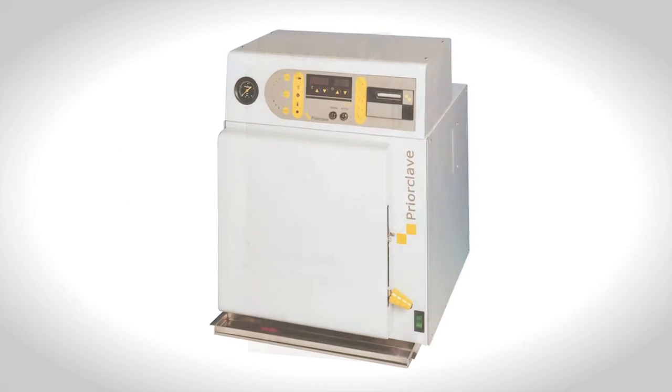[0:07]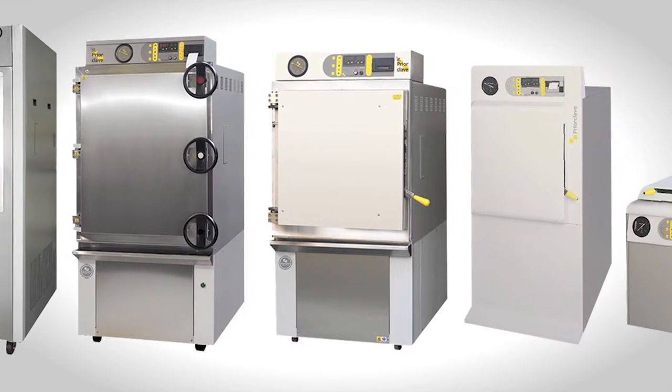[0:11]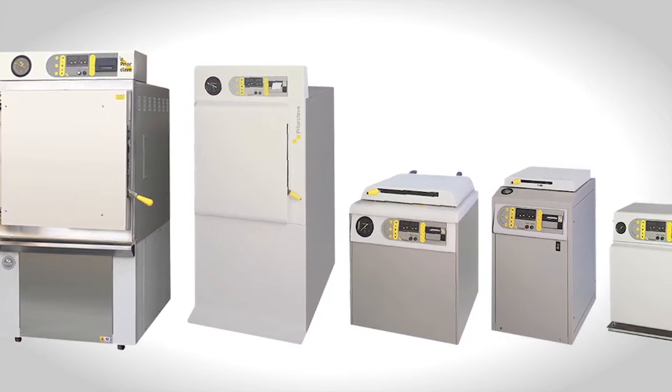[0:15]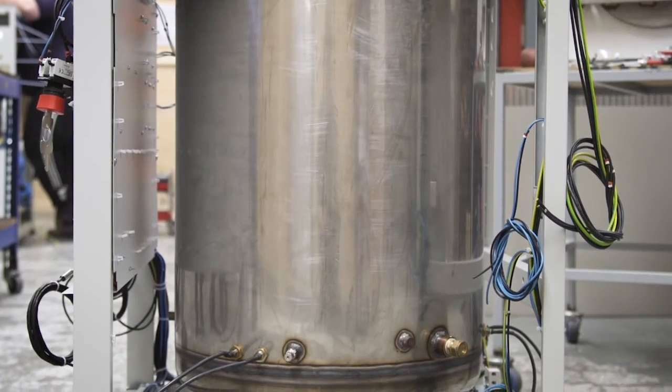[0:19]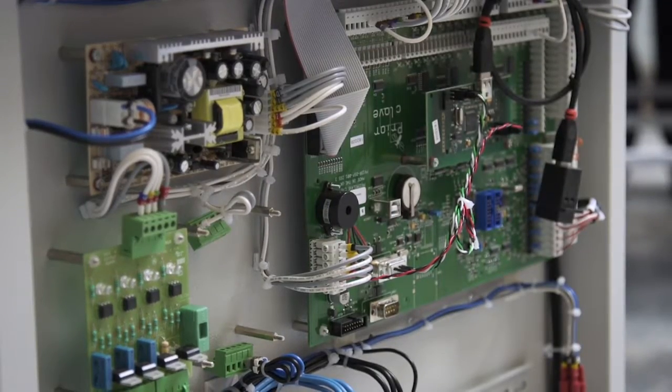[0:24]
For over 150 years, autoclaves have been used in laboratories to eradicate microorganisms and bugs from glassware, instruments and laboratory waste for safe reuse or disposal. The autoclave has three major parts: the pressure vessel, a frame and panels to support and cover it, and wiring and controls to manage the system.
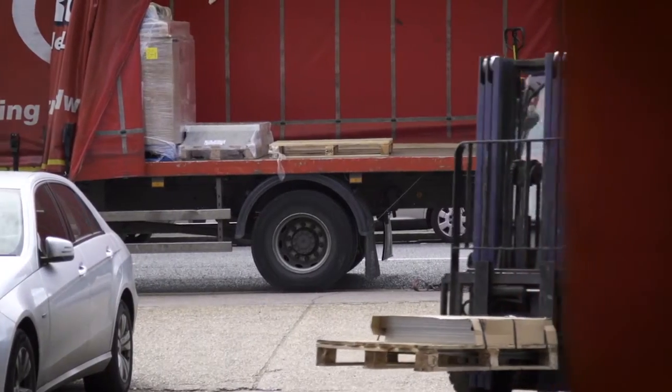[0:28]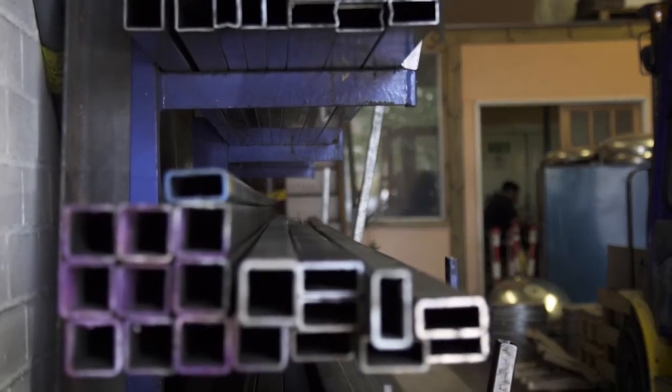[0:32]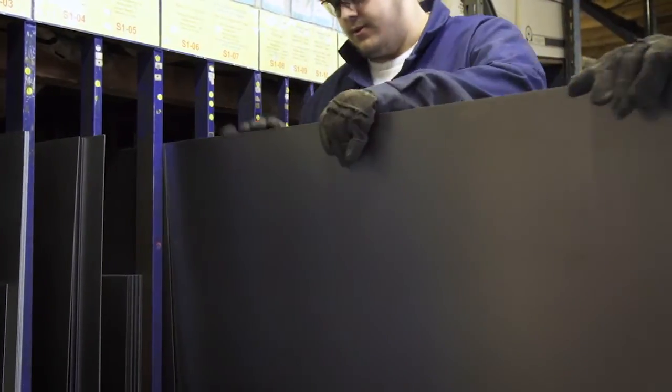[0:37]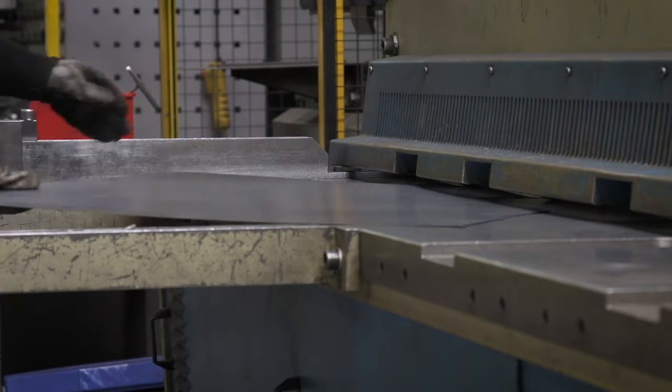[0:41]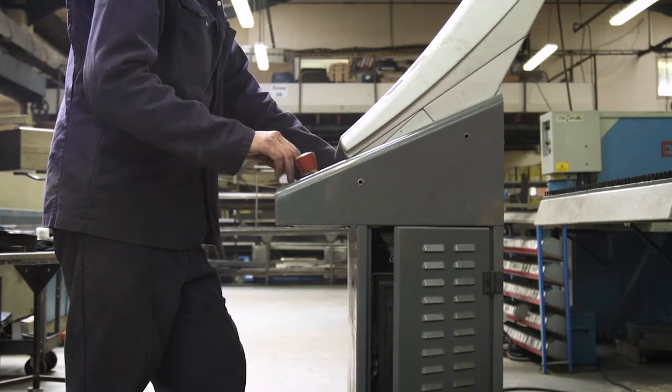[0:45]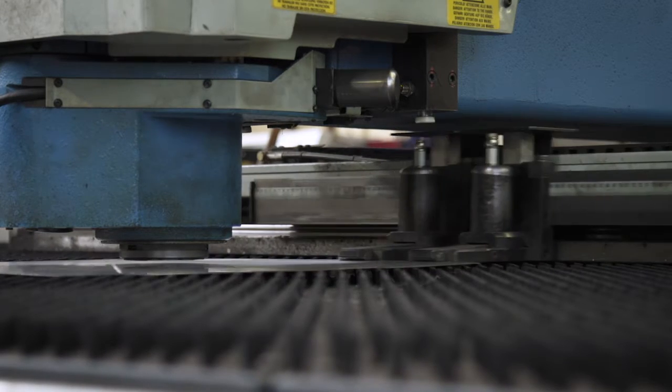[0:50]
Sheet and square section steel is offloaded and held in the metal store to await call off into the metal fabrication workshop, ready to start the manufacturing process. Workers use the heavy duty guillotine to cut the steel and produce the basic flat panel shapes needed. Next, a CNC floating table hole punching machine is used to punch holes and other shapes into these panels.
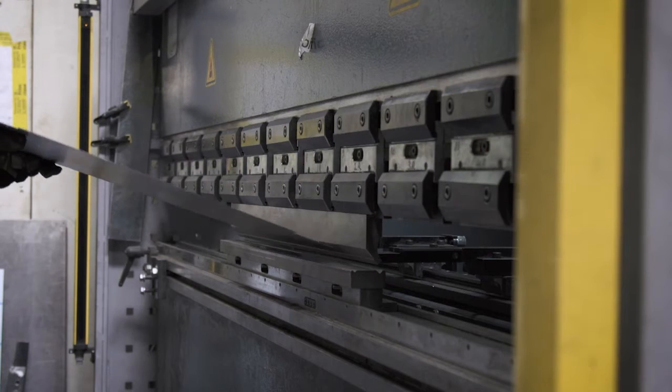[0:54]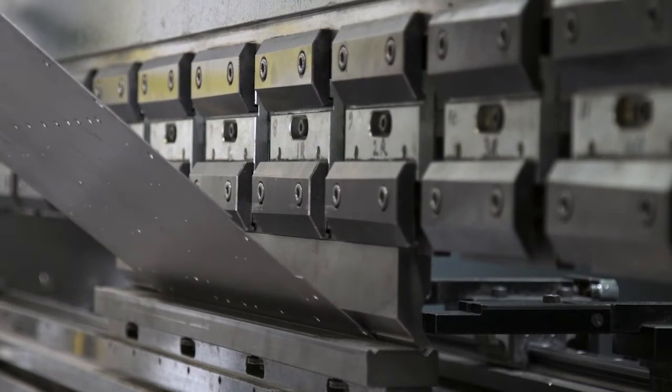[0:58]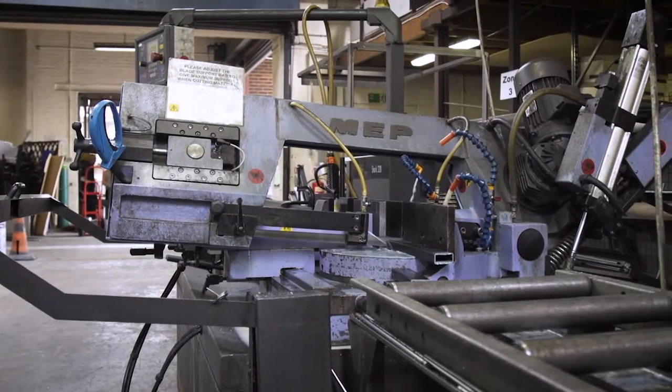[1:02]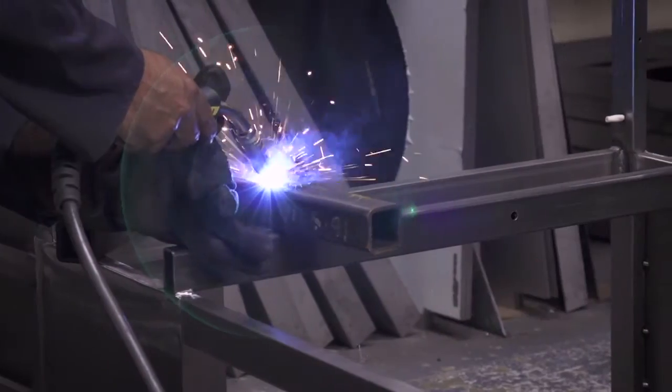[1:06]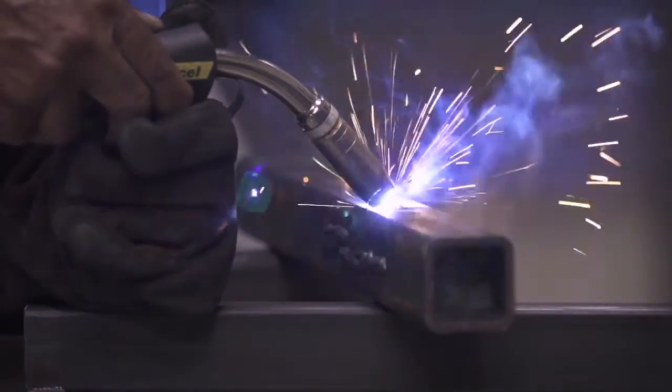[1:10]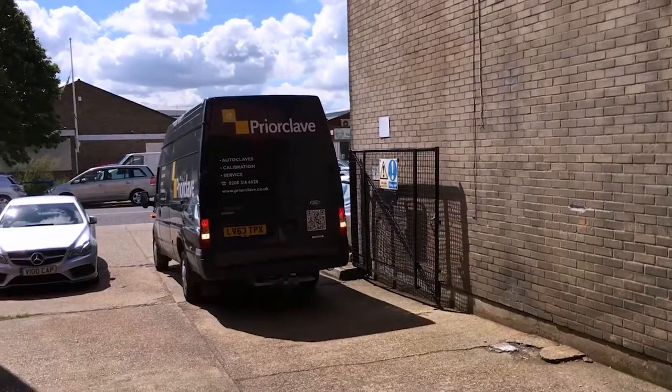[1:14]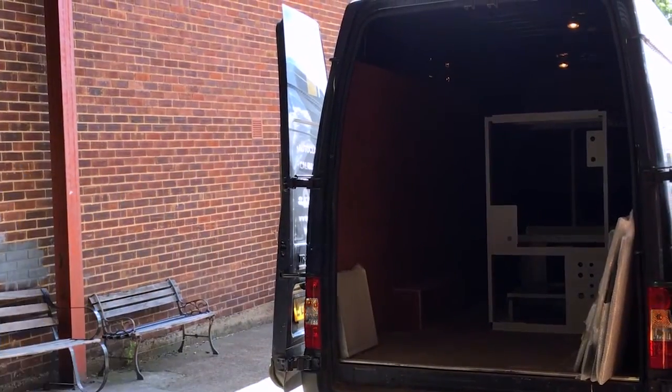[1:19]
The punched panels are then transferred to a metal bending machine, where workers create clean panel lines and smooth rounded corners that feature in the final build. Lengths of steel bar and angle for the autoclave frame are cut on the CNC saw and welded together ready for painting. At this stage, some finished panels are incorporated onto the frames. Finished frames and panels are sent for painting in antimicrobial powder coat and are returned ready for final assembly.
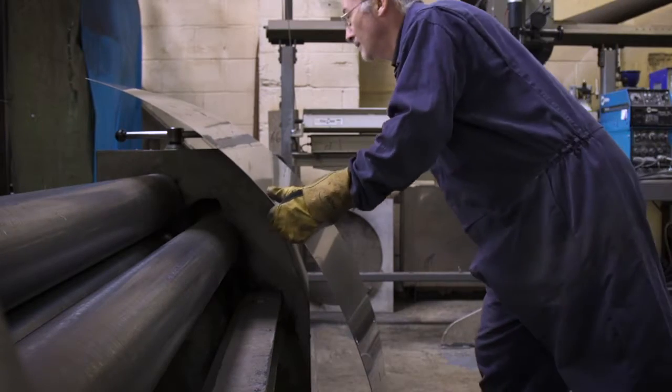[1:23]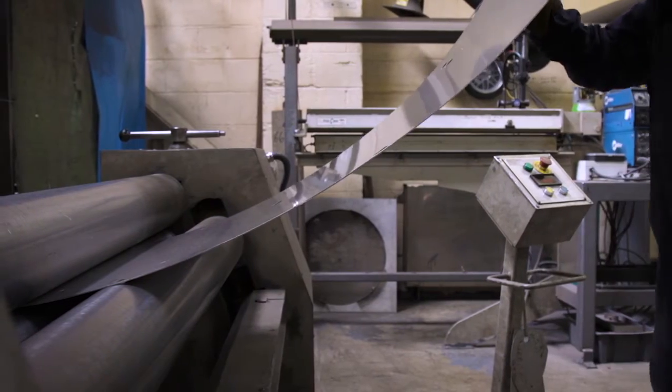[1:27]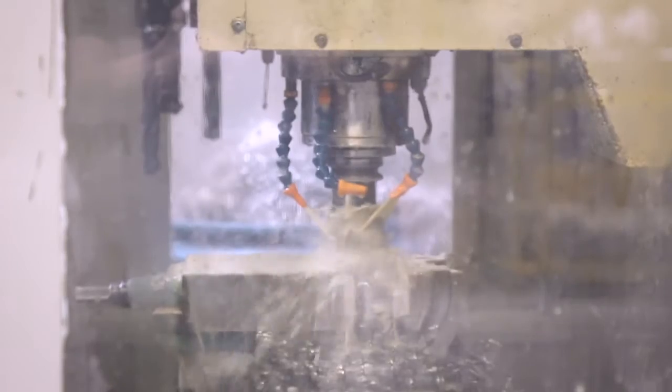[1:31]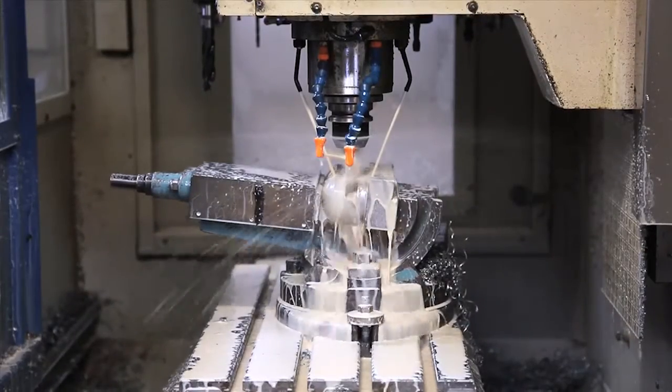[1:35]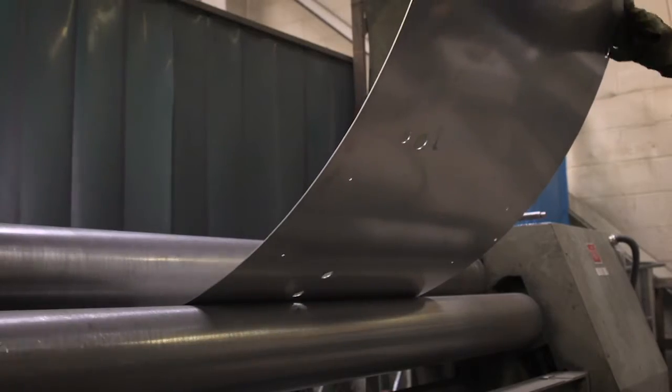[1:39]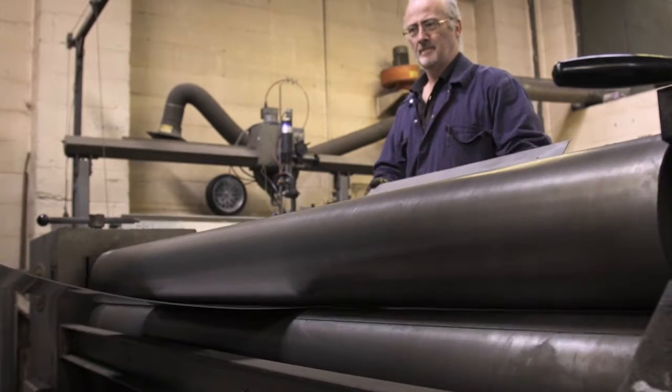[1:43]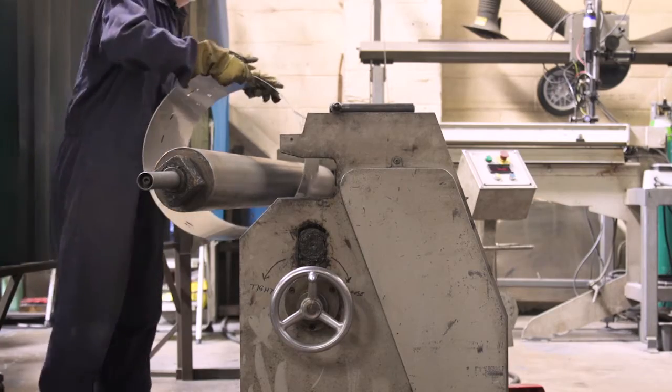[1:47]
High-grade stainless steel sheet is used to fabricate the pressure vessel and is fully certified to ensure full traceability. Laser-cut stainless steel header and door plates are machined on CNC lathes, mills and drills to finish them ready to form part of the finished pressure vessel. The pressure vessel wall is formed from a cut and punched flat panel on a rounding machine, making a gentle roll to bring two outer edges together.
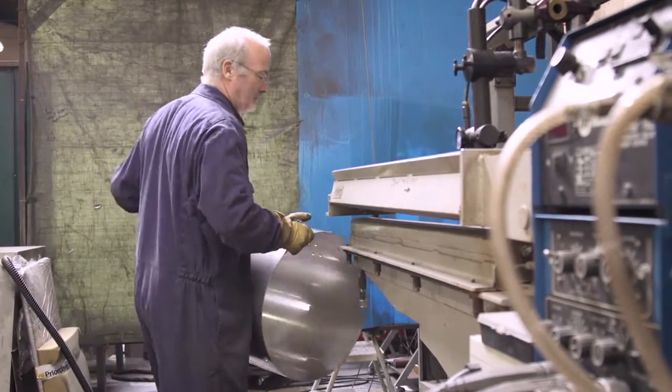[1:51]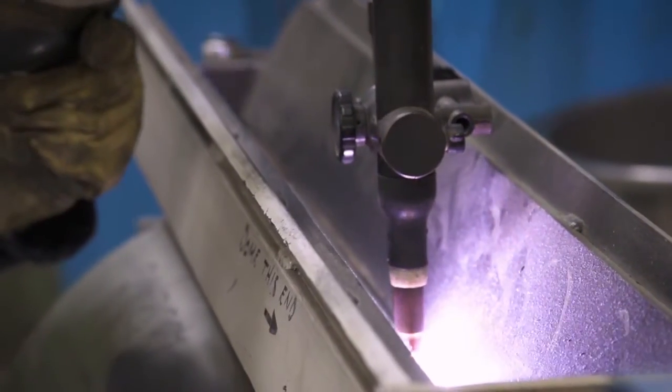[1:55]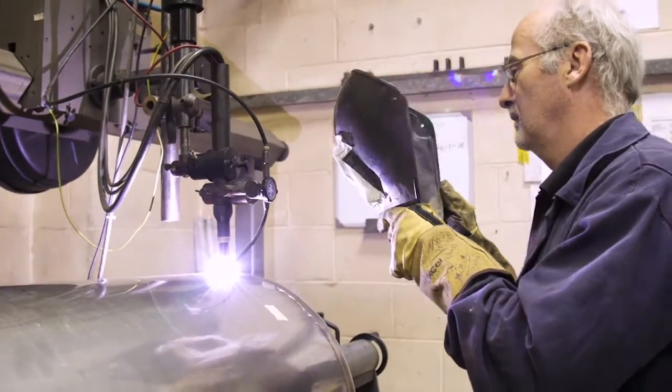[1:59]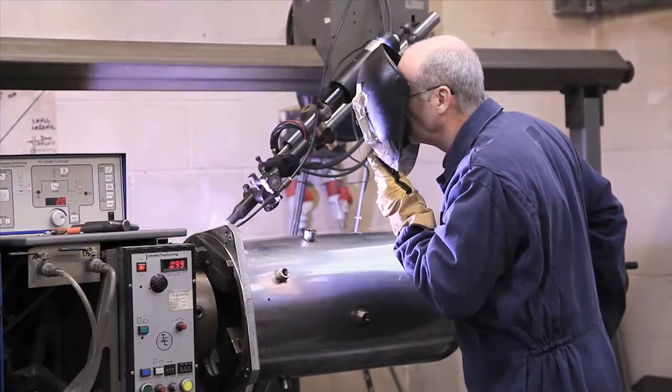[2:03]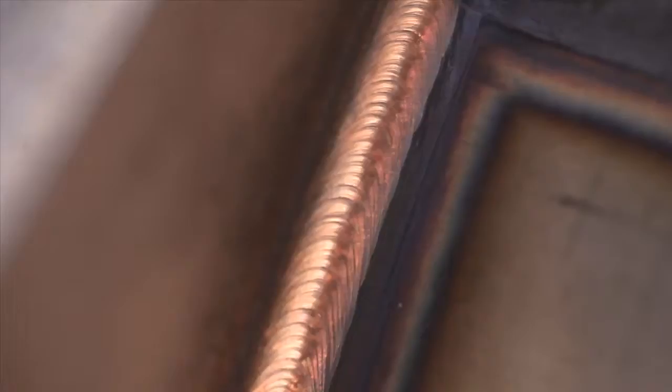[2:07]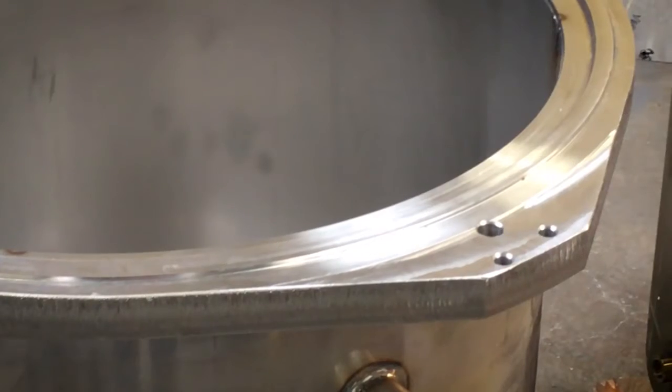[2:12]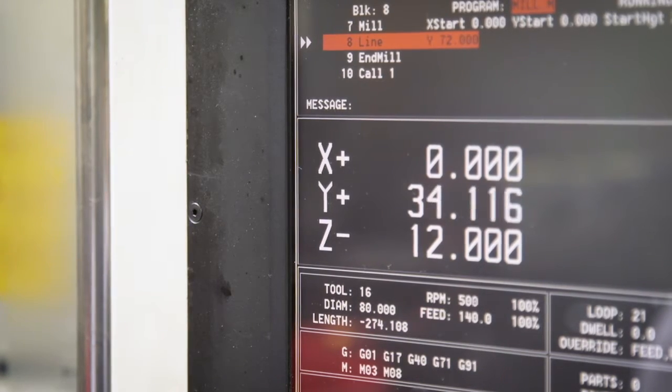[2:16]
An automatic seam welder is then used to produce a straight and smooth seam weld. Next, a large end cap is welded to the tube to finish the basic chamber construction. To finish the pressure vessel, a stainless steel header plate is welded to the open end of the cylinder. The header plate incorporates mounting flanges used to mount and fix the pressure vessel to the autoclave door and the mounting frame.
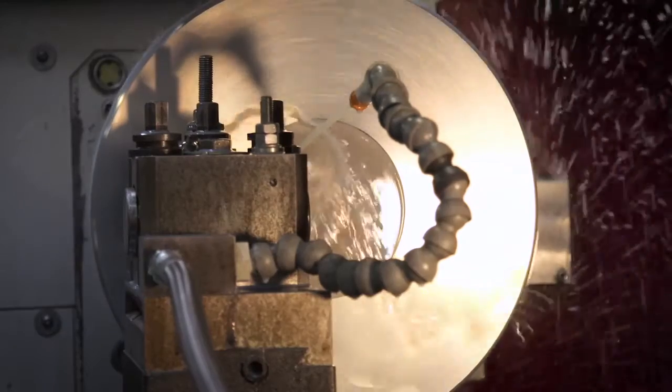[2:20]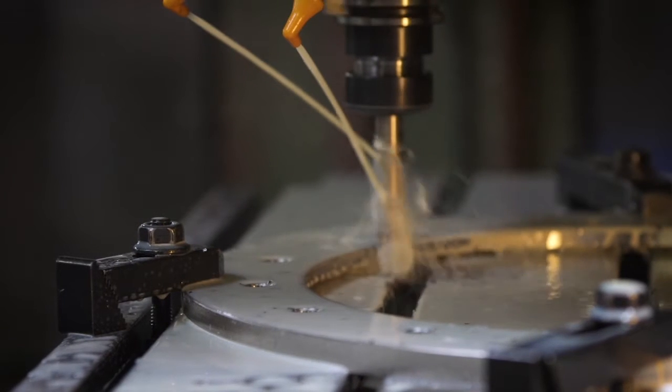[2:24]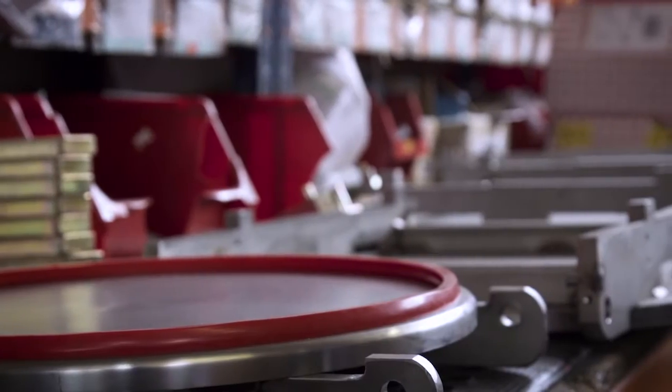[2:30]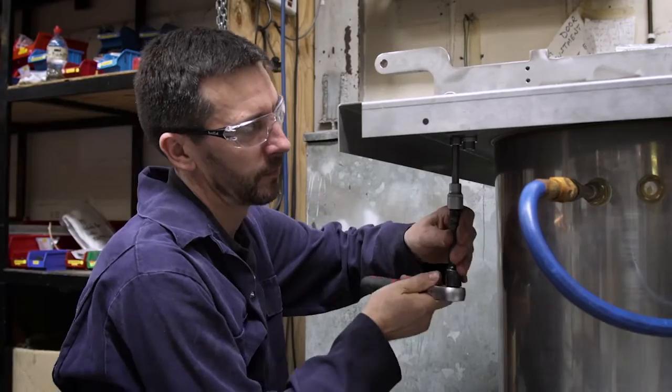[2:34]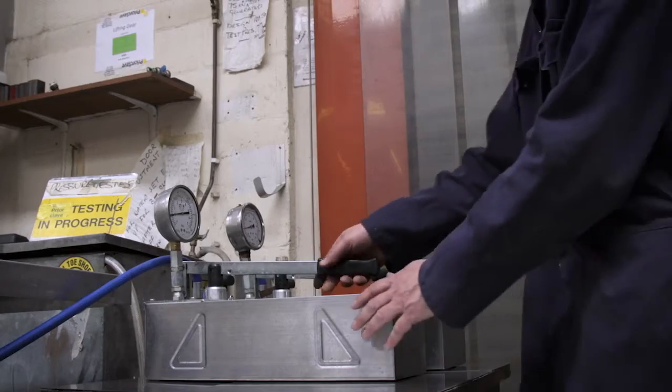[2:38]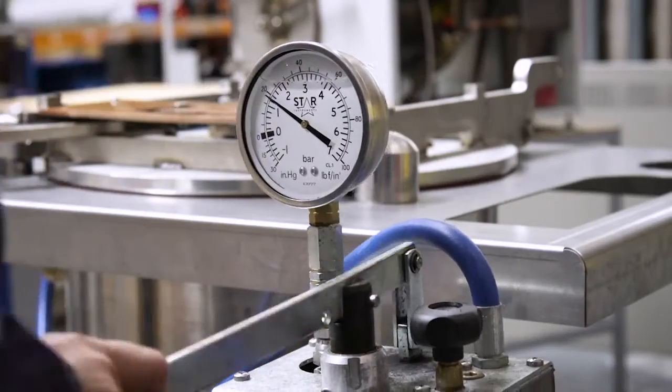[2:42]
Whilst the autoclave chamber takes shape, other parts of the workshop have also been busy. CNC multi-spindle lathes and milling machines produce the various smaller items that make up the finished build of a cylindrical autoclave. In the assembly area, the door and closure fittings are added to the pressure vessel so that it can be made watertight, ready for pressure testing. Every pressure vessel is tested under water pressure to 1.5 times its maximum design pressure and held for 30 minutes to check the integrity of the welds.
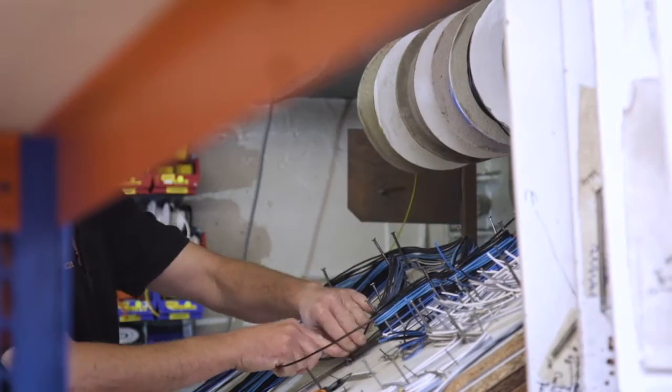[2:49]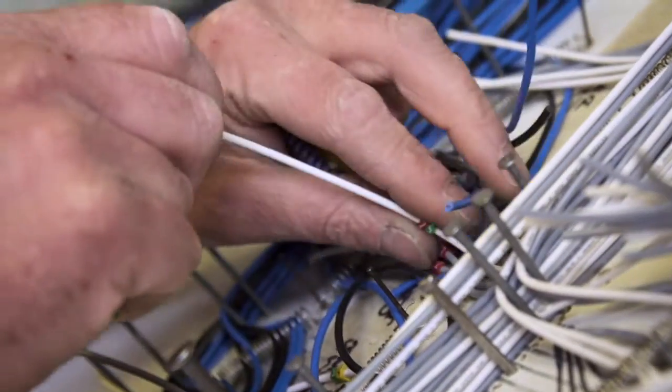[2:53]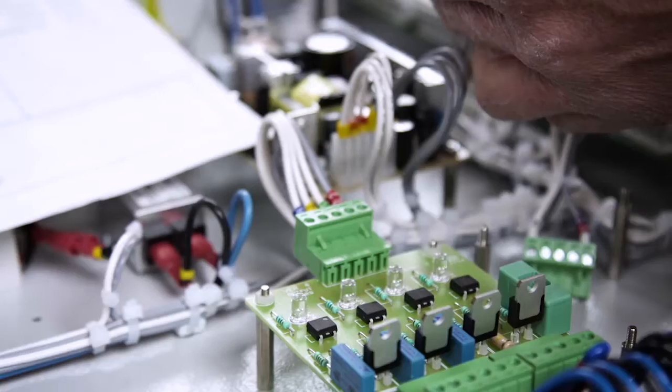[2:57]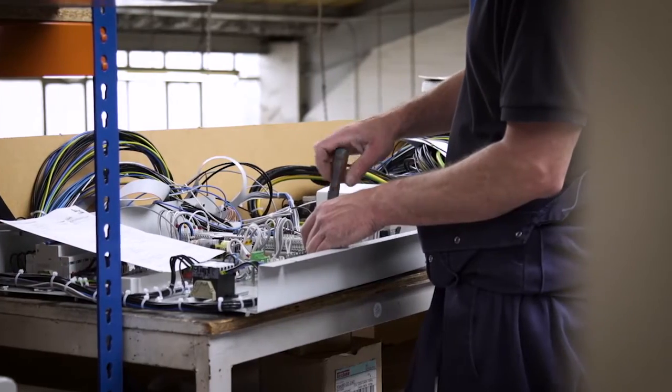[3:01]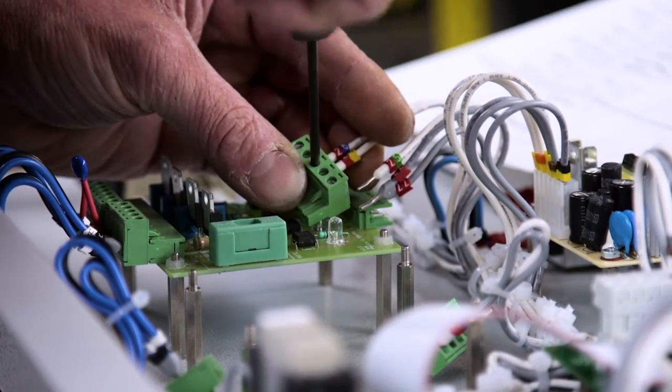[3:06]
In the electrical area, workers make up wiring looms to join all the electrical components to the control system. These are tailored to fit the shape of the autoclave frame. Control components, along with the microprocessor control board, are built up into an electrical chassis ready to be fitted along with the wiring loom to the autoclave during assembly.
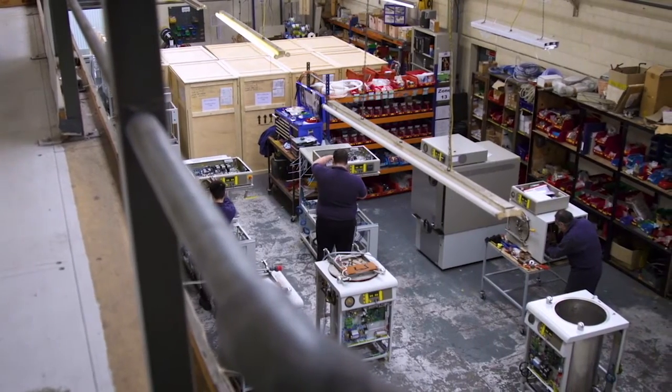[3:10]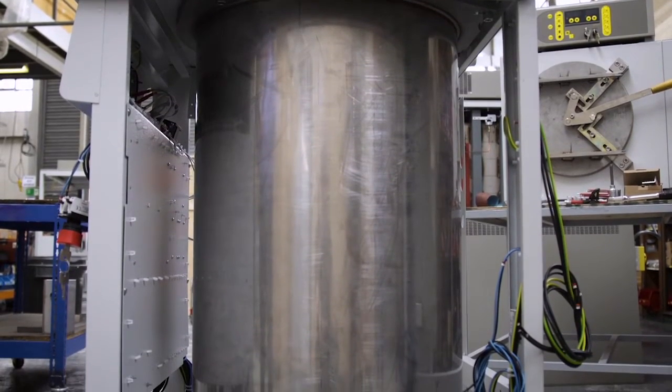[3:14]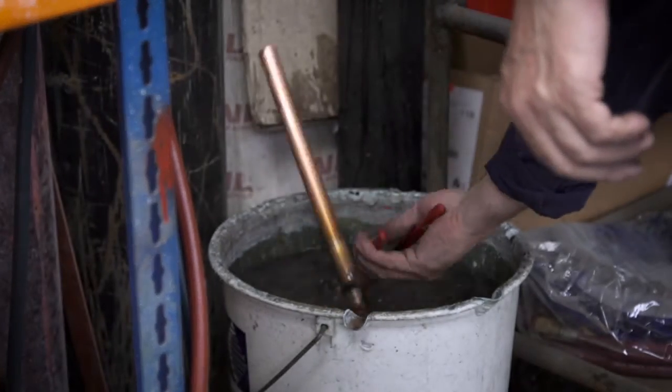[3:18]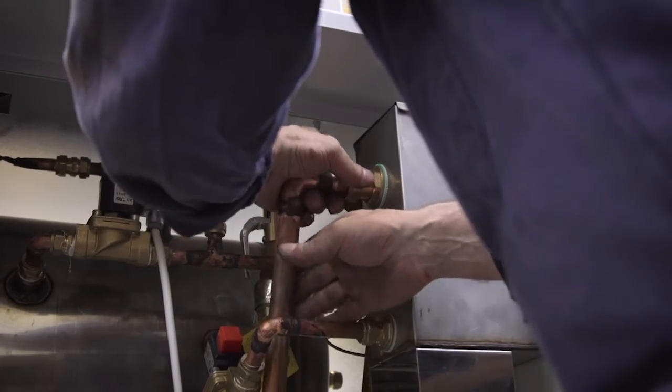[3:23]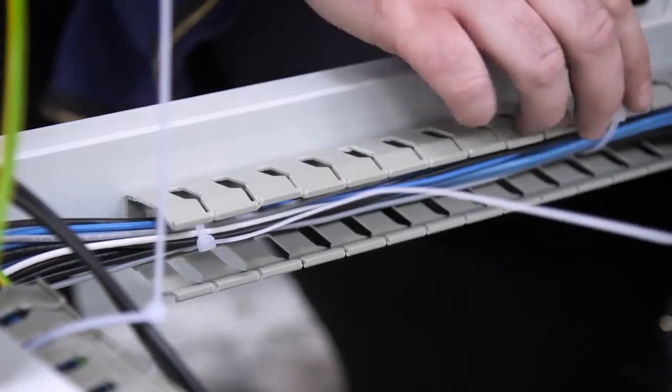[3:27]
All components come together in the build and test area. First, the pressure vessel is carefully mounted and secured in its frame. Next, all water and steam inlet feeds and outlet drains are manually built in copper tubing and valves are fitted. Like the wiring looms, the knowledge of the technician is important as each pipework run is different for each model.
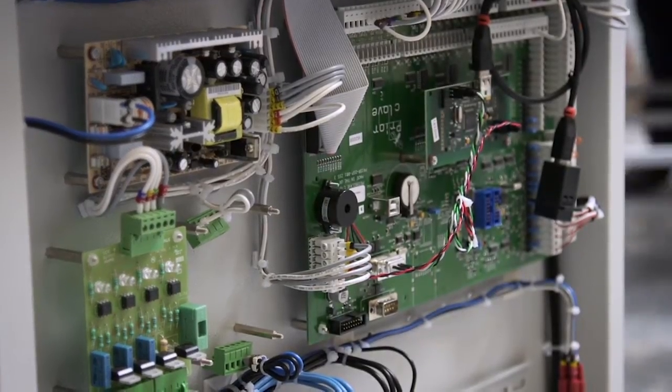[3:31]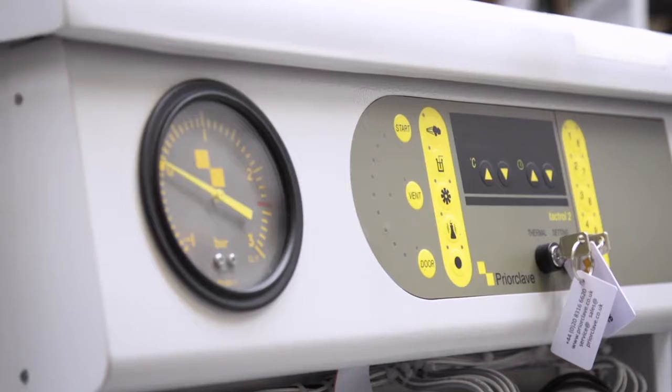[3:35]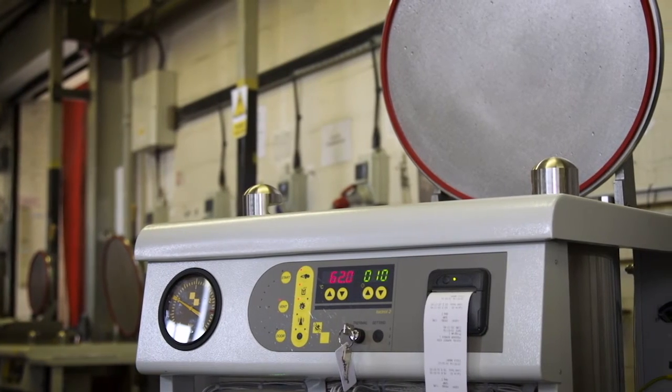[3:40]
Next, technicians fit the wiring loom and electrical chassis, carefully connecting all the switches, interlocks and actuators. Now they fit the control panel. This allows the autoclave operator to set up the autoclave for the many different sterilizing cycles that it's designed for.
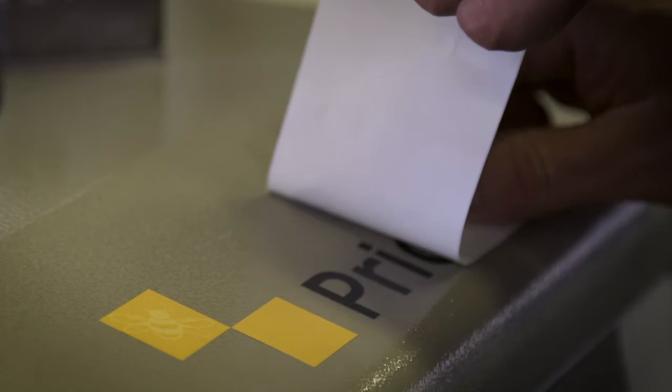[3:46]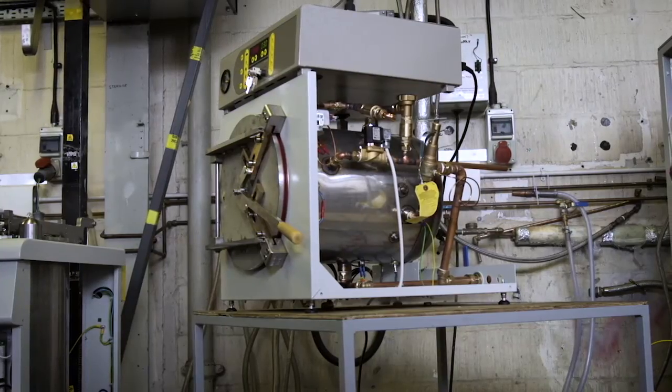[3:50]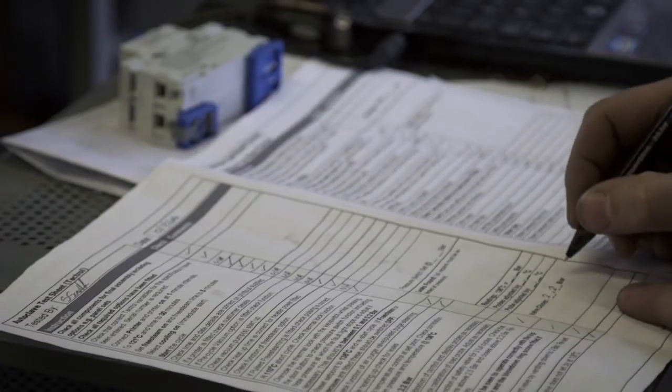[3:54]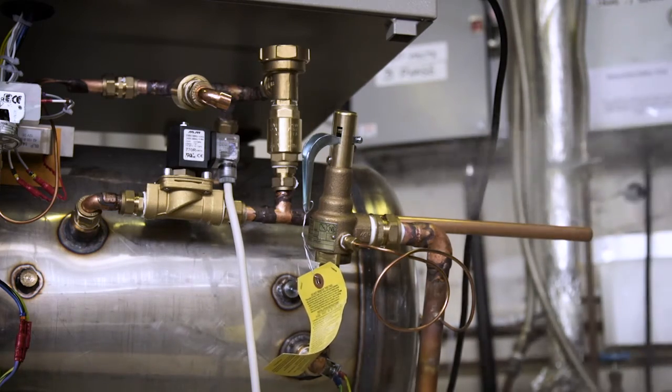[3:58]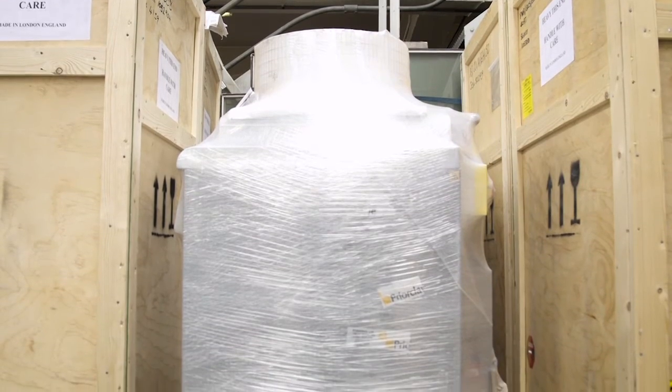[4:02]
Once the autoclave has been fully assembled, it's given a full operational test. The autoclave is run and is function and safety tested against an extended checklist. Where different options have been ordered, these are also tested. Satisfied the laboratory autoclave has been built to fully meet the customer's order, it is prepared for shipment.
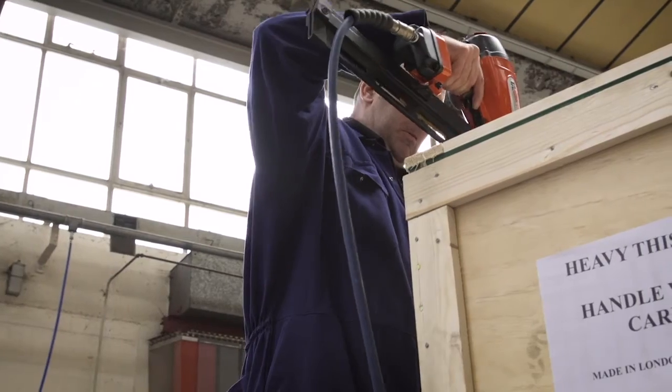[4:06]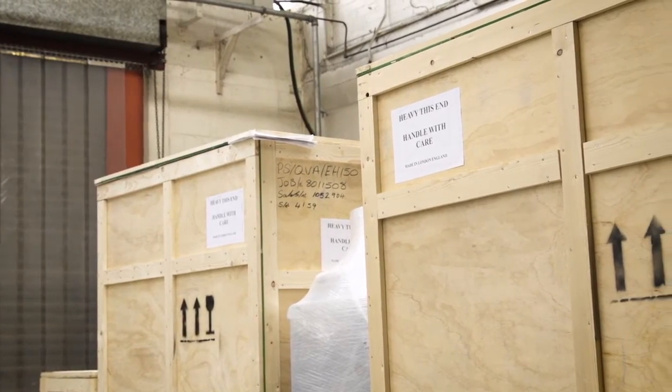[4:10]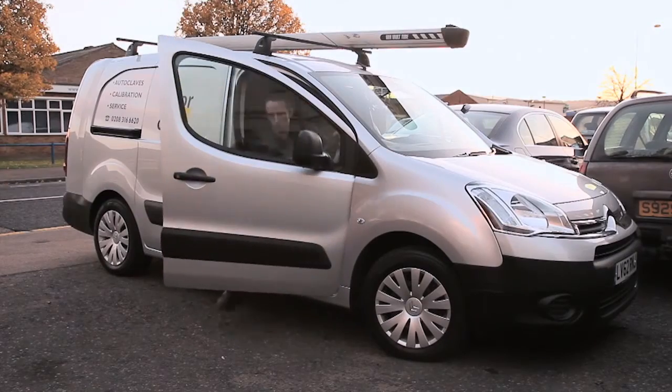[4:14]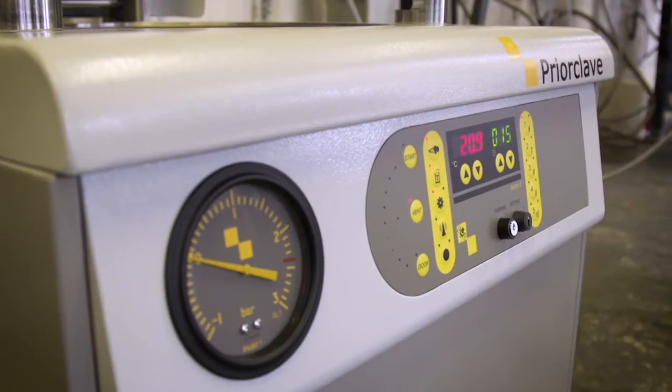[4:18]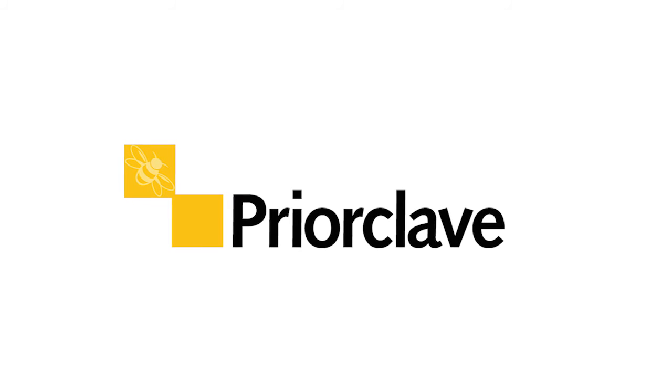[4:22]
Where the autoclave has been built for export, it is packed in a robust wooden case to protect it on its long journey ahead. Once an autoclave arrives at the customer's premises, engineers and support staff ensure trouble-free installation. And that is how an autoclave is built.